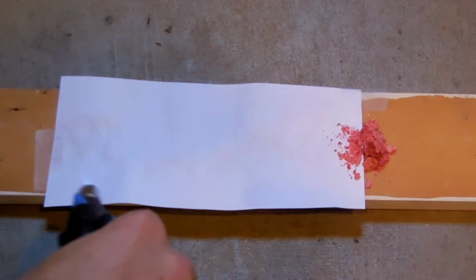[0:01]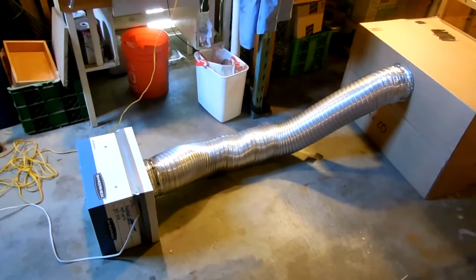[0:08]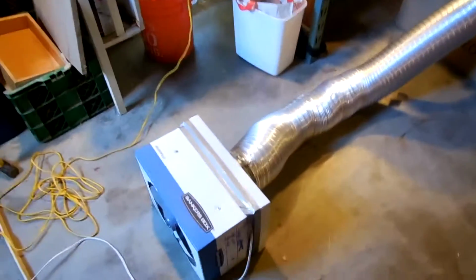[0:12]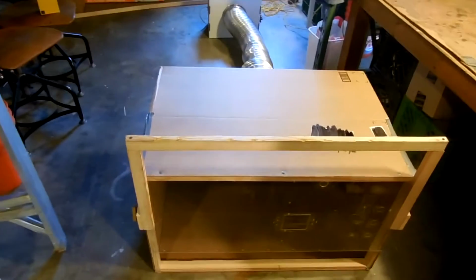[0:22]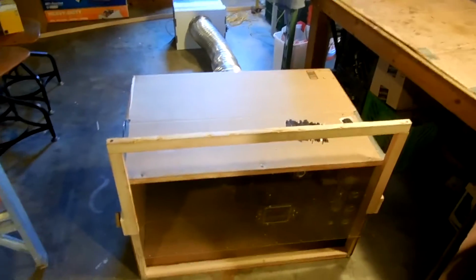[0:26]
Some of its features are it has a controllable speed fan, it's got four settings, and it's got an adjustable sash that raises and lowers. So stick around if you want to see a commentated speed build on how I made my fume hood.
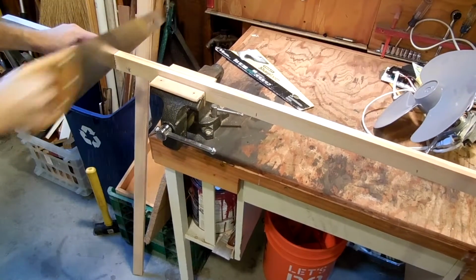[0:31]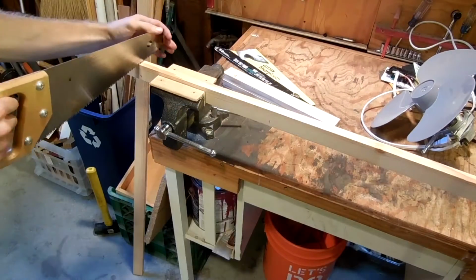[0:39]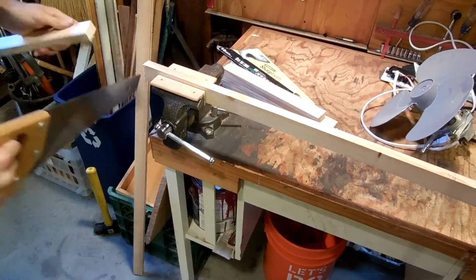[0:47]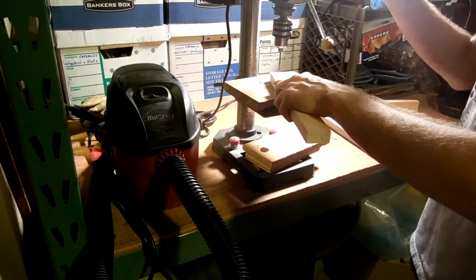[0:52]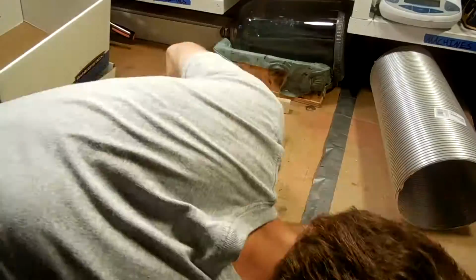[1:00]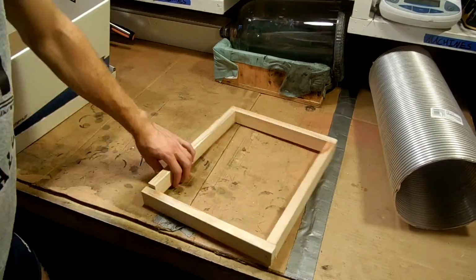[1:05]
So the first thing I did was measure the box to the fan, and then I sawed up some 1x2 to make a little frame for it. I just made four pieces. Then I did a little test fit, and they fit nicely. So I pre-drilled them on the drill press. Then I went over to the table and screwed them together with some little wood screws.
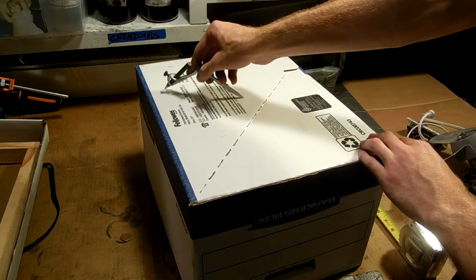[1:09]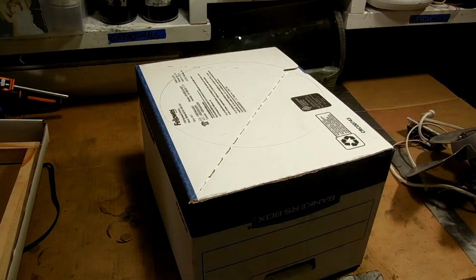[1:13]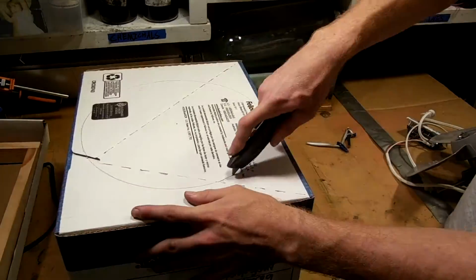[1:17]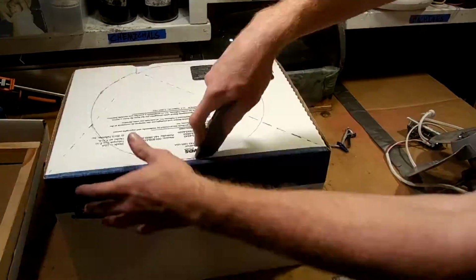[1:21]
Nice and solid. Next I went to the box, and I used a compass to draw the circle that'll cut out for the fan blade. And then I cut that out using an X-acto knife and also some shears to trim the hole to fit it perfectly.
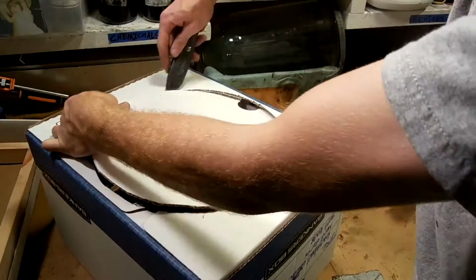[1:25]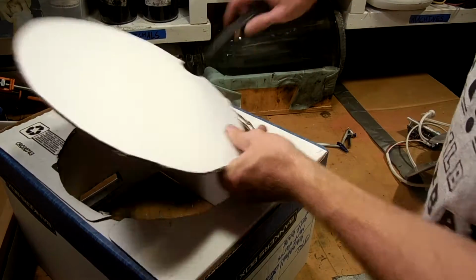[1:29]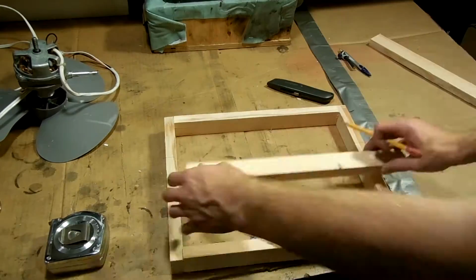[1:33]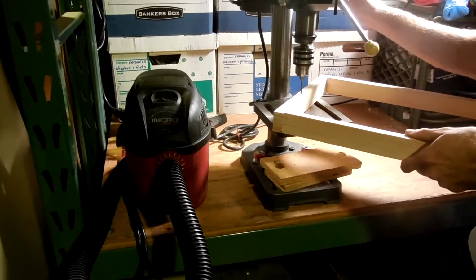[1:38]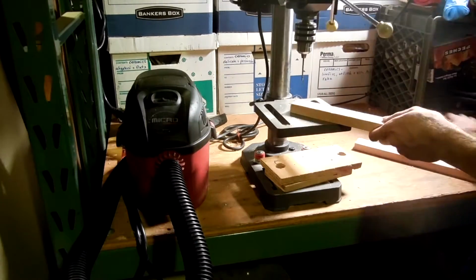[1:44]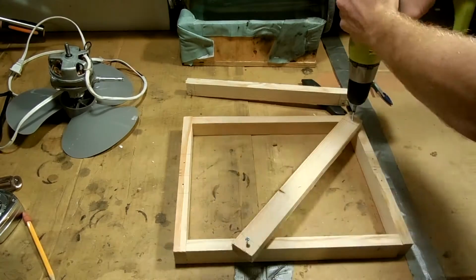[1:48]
Next, I measured the box to find the middle, and then I made some supports for the motor mount. I pre-drilled some holes in the frame itself, and then in the supports. And then I preloaded some screws into them, and then shot it into the frame.
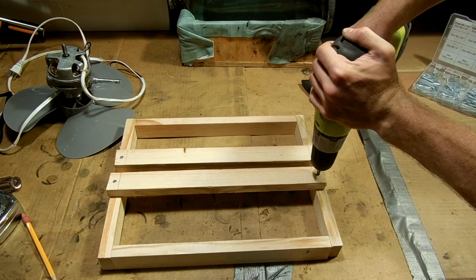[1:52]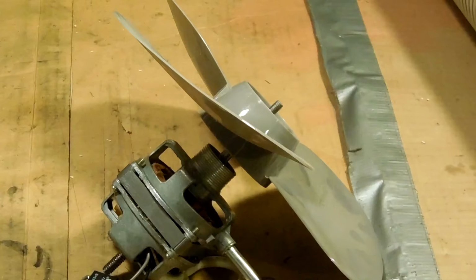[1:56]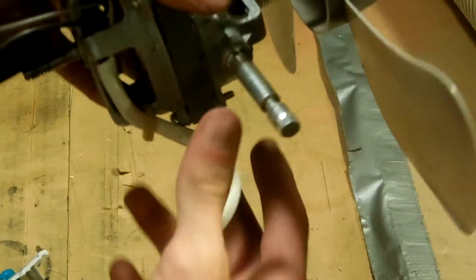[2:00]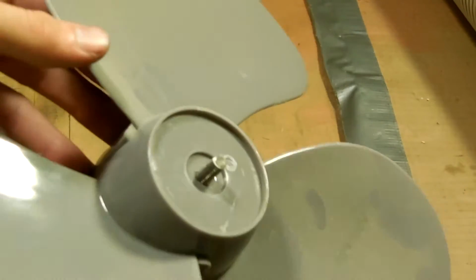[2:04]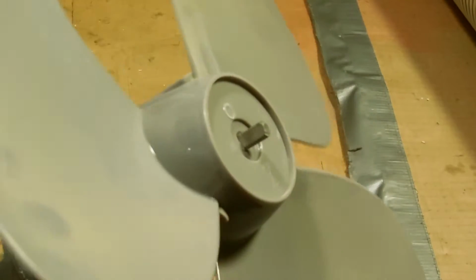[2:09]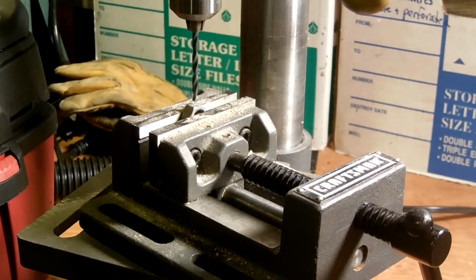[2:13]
Now the motor itself is an old salvaged fan motor that I got off of a house fan, but it has a left-hand thread nut on the front that I don't have anymore. So I need to make a set screw and a collar to hold on the fan blade. So that's what I'm going to do in this part.
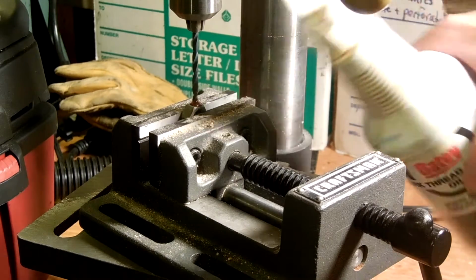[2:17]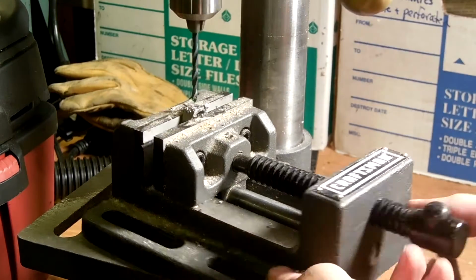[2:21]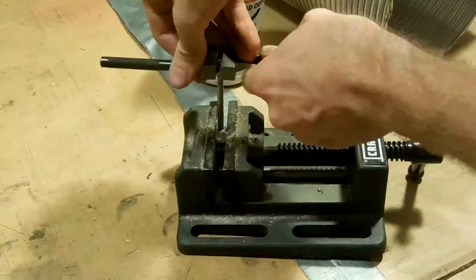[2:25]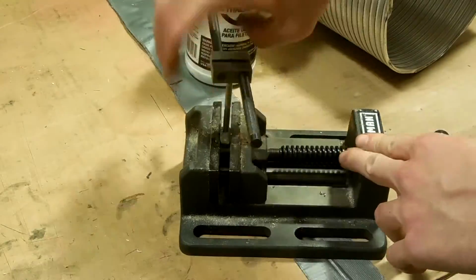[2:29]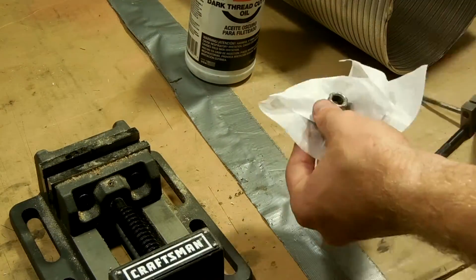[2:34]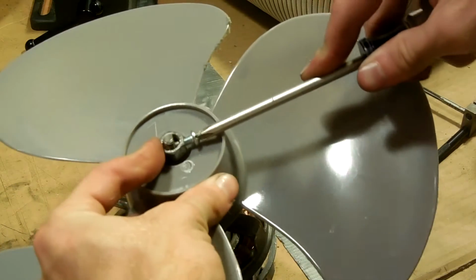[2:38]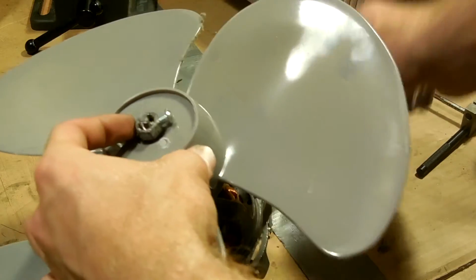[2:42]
So I took an old 5/16 nut that will fit over the shaft, and I'm drilling it out on the drill press with the correct size hole, and then I'm going to tap it with a 10-32 thread. Then I'll clean it up, and it's ready to go. Now I can install it with a 10-32 bolt, and it holds the propeller onto the fan very nicely. And that's not coming off.
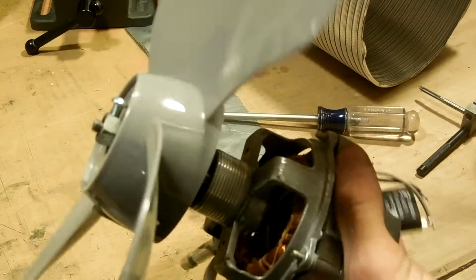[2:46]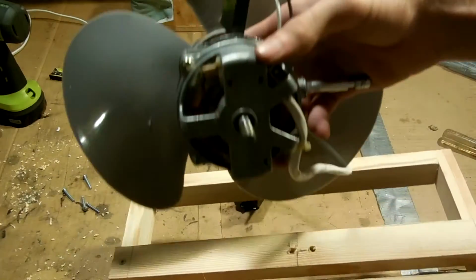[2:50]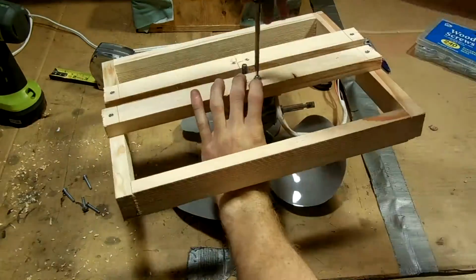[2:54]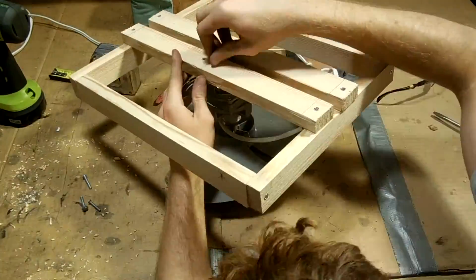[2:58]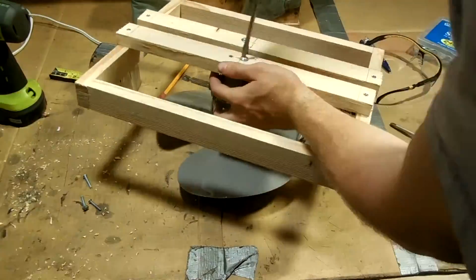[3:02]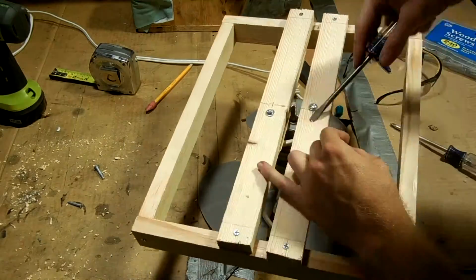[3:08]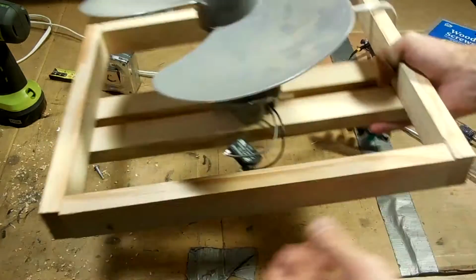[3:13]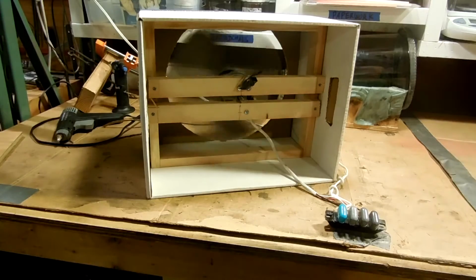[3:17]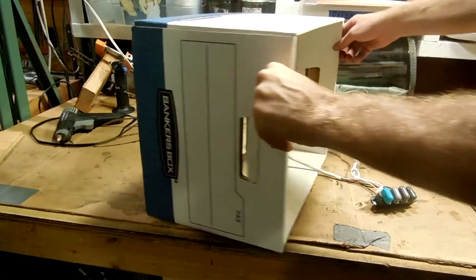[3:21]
Next, I looked at the holes in the back of the motor that I'm going to use to mount it, and I carefully measured. And then I used some little threaded screws to install the fan onto the frame. And I was pleased with the sturdy fit. Here's a test fit of the fan mount into the box, and it seems to work just fine.
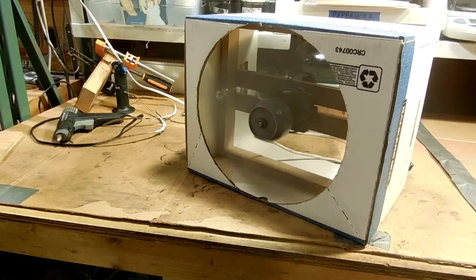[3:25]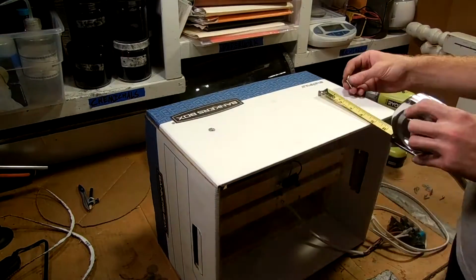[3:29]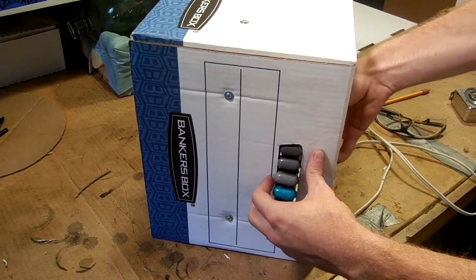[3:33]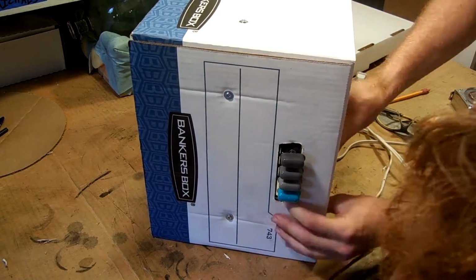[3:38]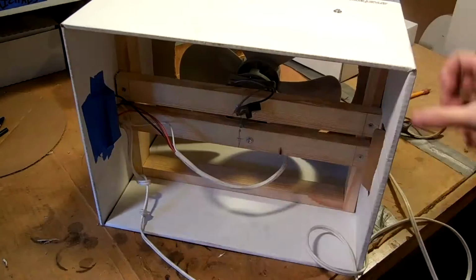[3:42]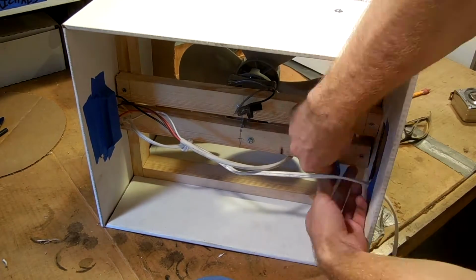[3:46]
Next, I just used some screws, and I measured the frame, and I screwed it directly into the box with some washers. Next, I put the button panel of the fan through one of the handles of the box, and taped it in the back. This is one thing that I have to revisit, because it really doesn't hold that well. But then I took the cord and I ran it through the other side of the box, and also taped that closed, so we don't lose air through those holes.
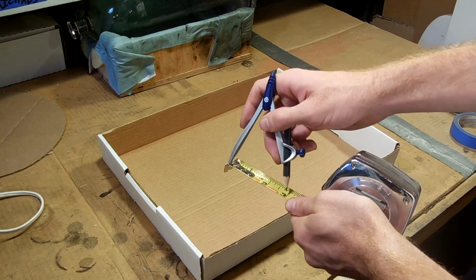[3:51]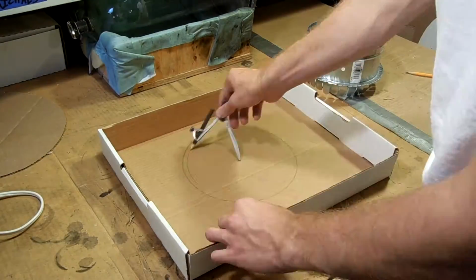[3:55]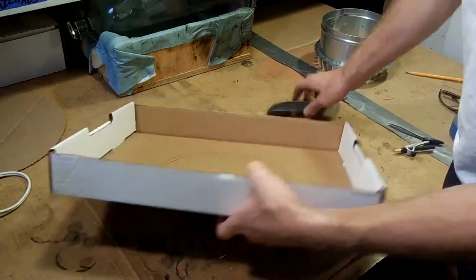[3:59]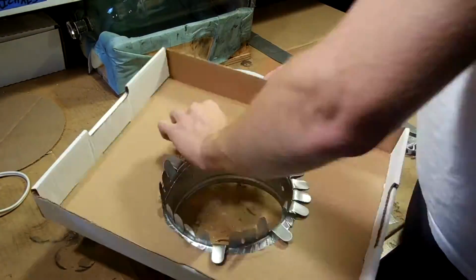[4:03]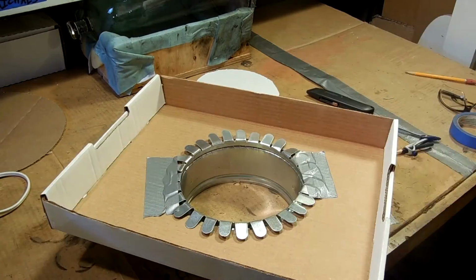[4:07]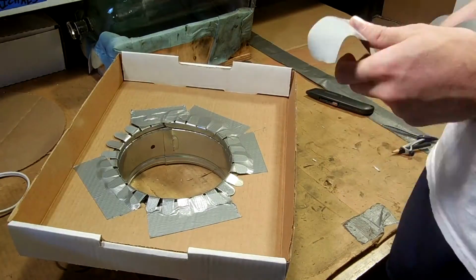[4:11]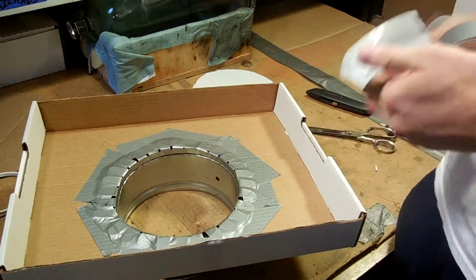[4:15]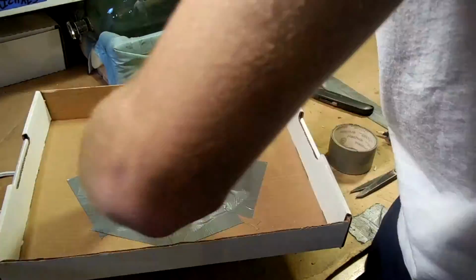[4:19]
Next, on the lid of the box, I measured a hole for the flange for my ductwork, and then I cut it out with an X-acto knife. The flange fit nicely through the hole, and then I bent down the tabs, and I had to use duct tape around it because I cut the hole a little bit too large. So this way I can still get a good seal, even with an imperfect hole. After that, I taped the lid of the box with the flange onto it, onto the rest of the box.
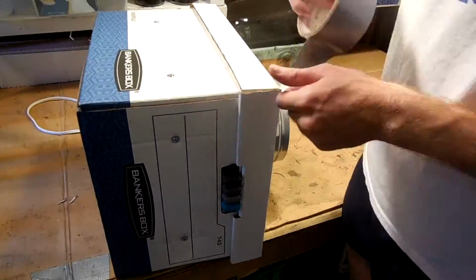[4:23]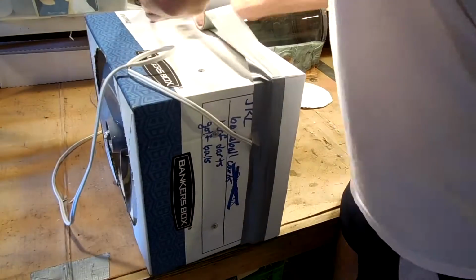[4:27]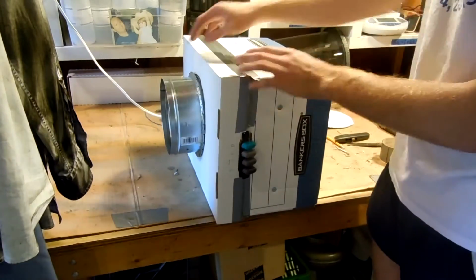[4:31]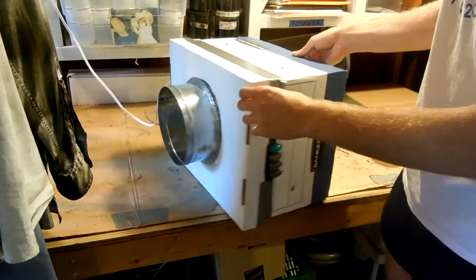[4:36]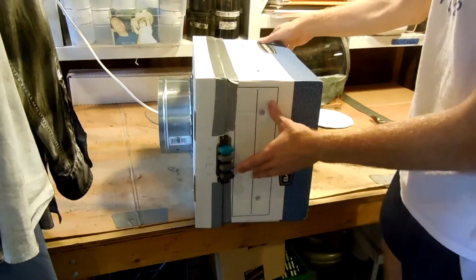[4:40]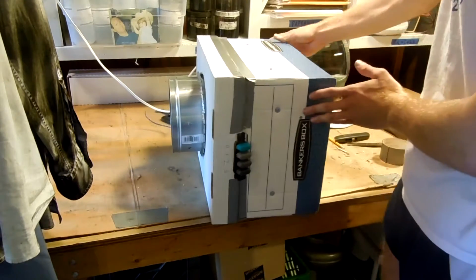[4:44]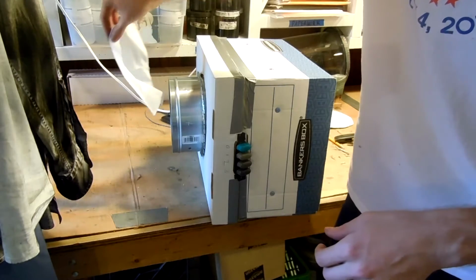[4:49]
So here's the finished box fan. It blows out this way, and it sucks from this end. We've got a flange for a hose, power one way, and the three-button control panel runs the fan, and on its highest setting, it certainly sucks pretty effectively.
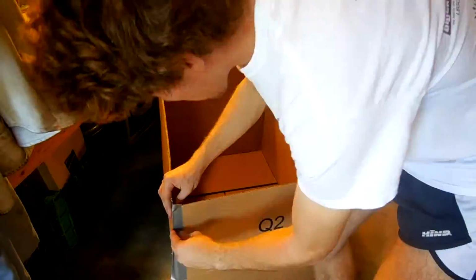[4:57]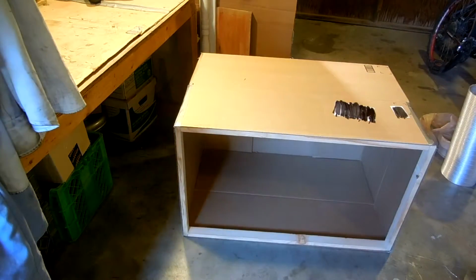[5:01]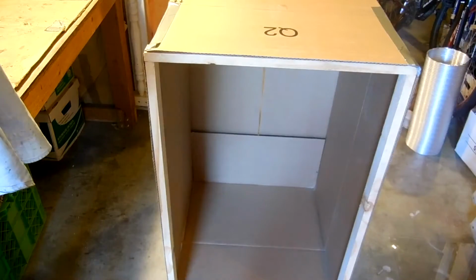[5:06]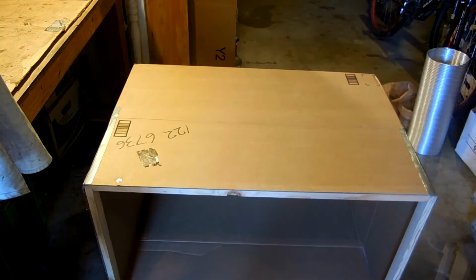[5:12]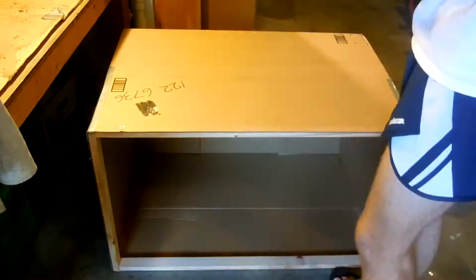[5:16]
Next, I've moved onto the box for the fume hood itself. I wanted it larger, so I took the tabs and taped them together with some duct tape to make the box extended. And then I made a similar frame as I did in the fan box out of the same wood, and I used some washers and screws to screw the cardboard box onto that, effectively making the box sturdier and also larger. I had a piece of bad wood and I had to replace it there. That's what I get for buying cheapest lumber possible.
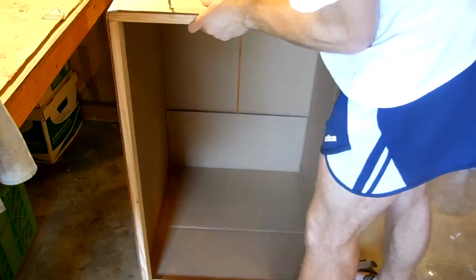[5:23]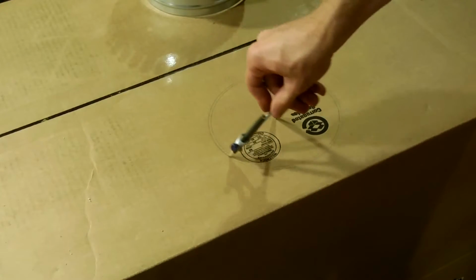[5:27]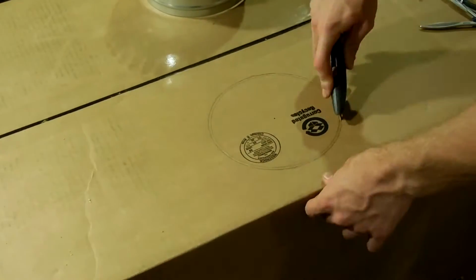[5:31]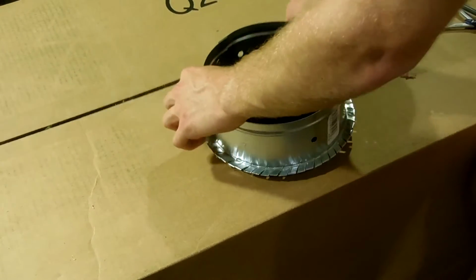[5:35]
Next, I cut a hole in the back, similarly for the flange, and this time it was a better fit and I didn't need any duct tape. So I popped it through, and that was that.
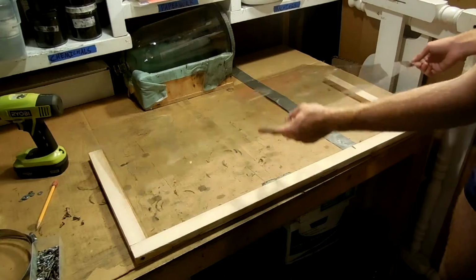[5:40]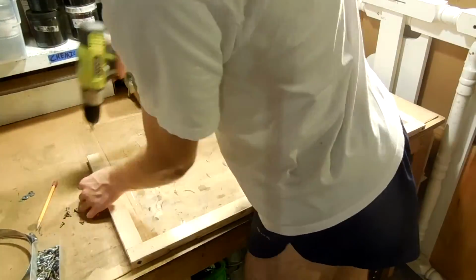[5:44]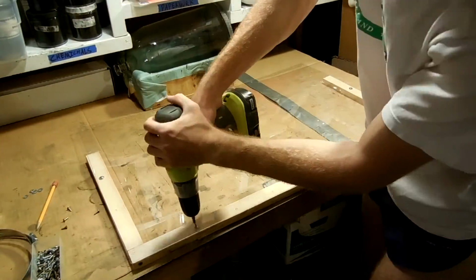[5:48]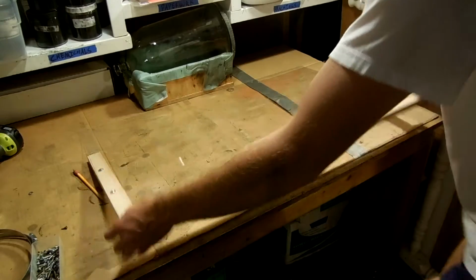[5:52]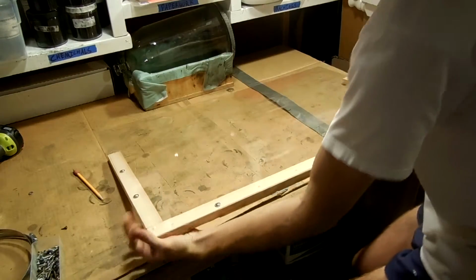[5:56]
For the sash itself, I'm using an old piece of acrylic, and I'm just screwing that onto a little frame that I whipped up, very similar to the other ones, again using little wood screws and washers. And there's my sash. Now it's time to make some hardware for the sash.
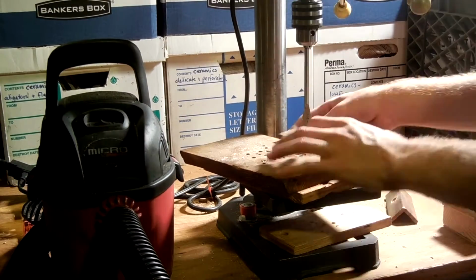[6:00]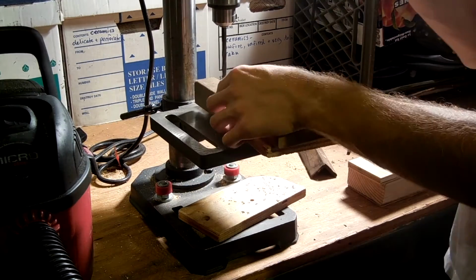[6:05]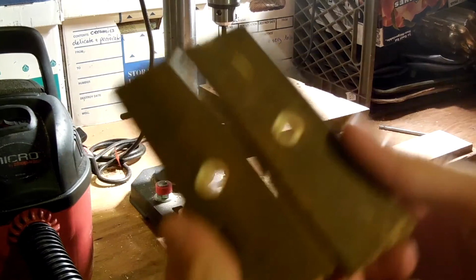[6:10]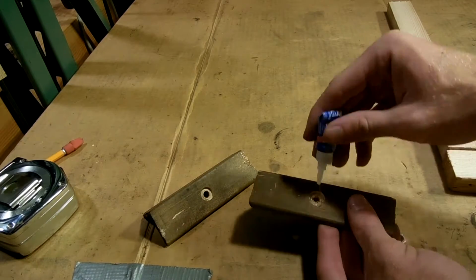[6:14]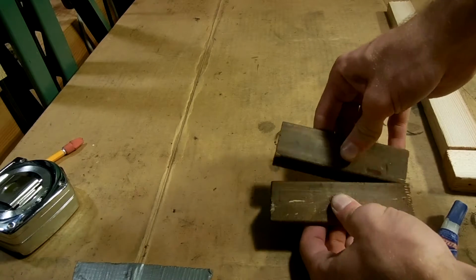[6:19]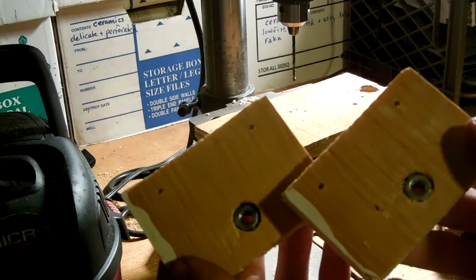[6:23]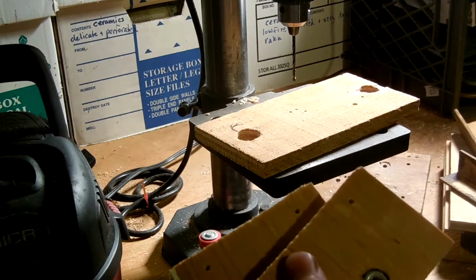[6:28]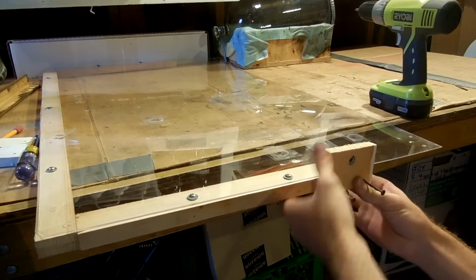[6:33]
So I'm drilling a piece of wood that I can fit a nut into to use as an attachment point. I drilled a 1/4-inch through hole and then used a spade bit to make a larger opening to fit the nut in. Next I used some super glue or cyanoacrylate glue to fit some nuts in. And now this is what I'll attach to. Eventually I ended up switching to a different layout. These are flat blocks, but it's the same idea. I pre-drilled those, and then I attached them onto the fume hood at the bottom of the frame.
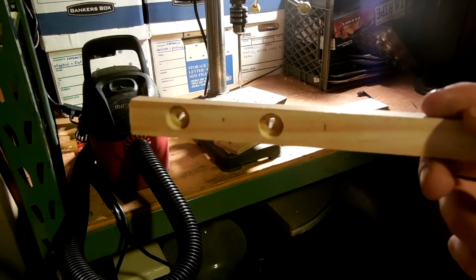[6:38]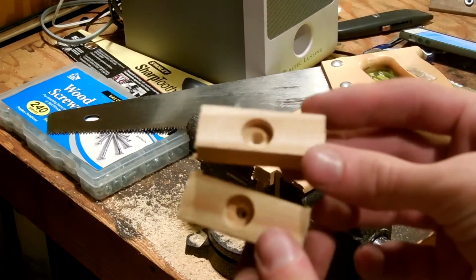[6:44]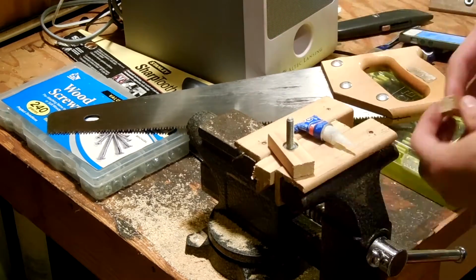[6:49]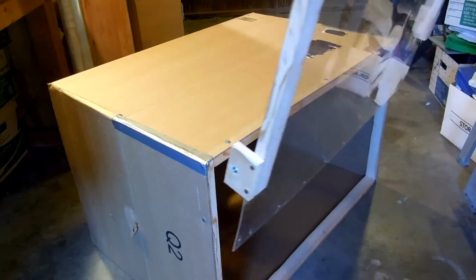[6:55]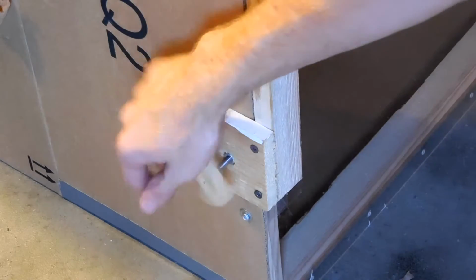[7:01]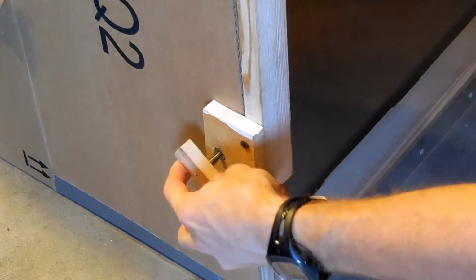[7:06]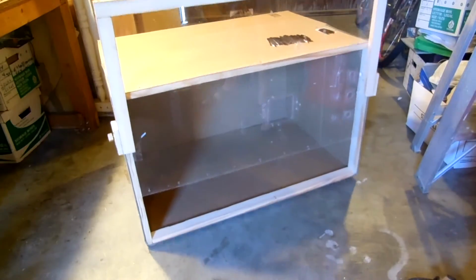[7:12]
Next, for the bolt, I cut similar holes into a strip of wood, and then I cut those down to size. Next, I used super glue again to attach the nuts into the wood, and hereby I made some knobs that I could use. Now I can slip the sash right onto the fume hood and thread on the nuts that'll hold it in place. And so this is how I'll adjust it up and down while holding it tight. And as you can see, it's pretty sturdy in any position. It really does hold on.
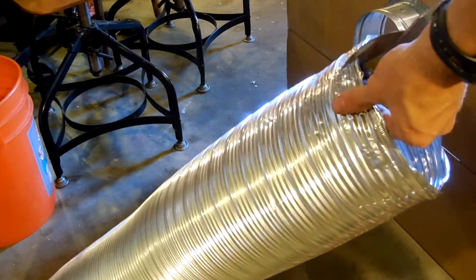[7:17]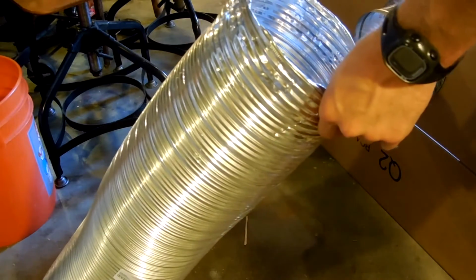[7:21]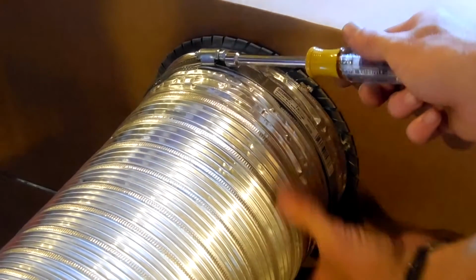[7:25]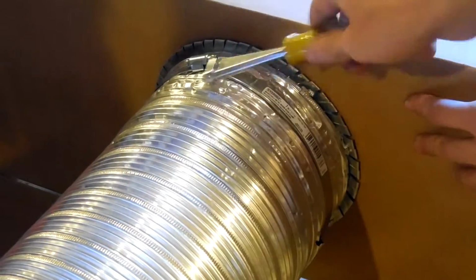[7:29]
Next, I installed the ductwork. I had to actually slit the ductwork a little bit to get it to fit onto the flange, even though it should have been a good fit. And then I used a 7-inch hose clamp to just secure it on.
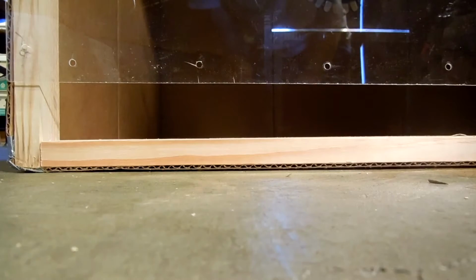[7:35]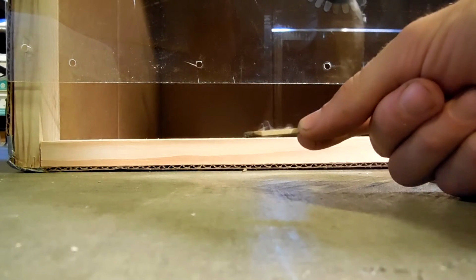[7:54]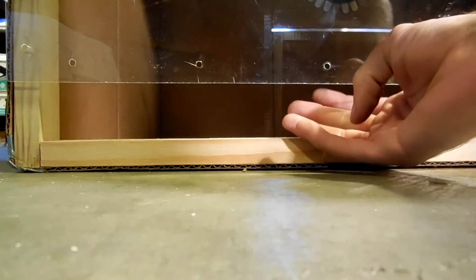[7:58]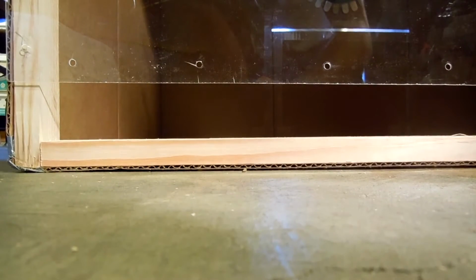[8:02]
Just to demonstrate the flow of my fume hood, this is with it set on maximum airflow and the sash pretty low. So here's just a match. It burns fine once we get it to catch. Then the smoke from the match gets pulled straight into the fume hood, even from pretty far away. And I can feel the airflow nicely on my hand, so I'm quite pleased with the performance of the device.
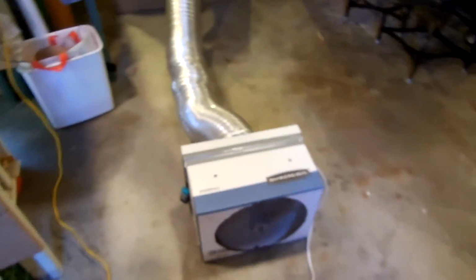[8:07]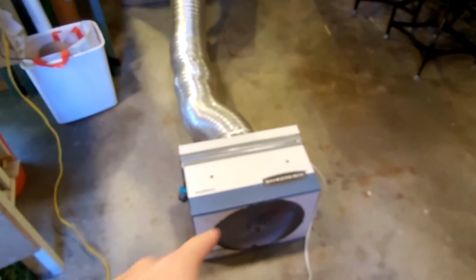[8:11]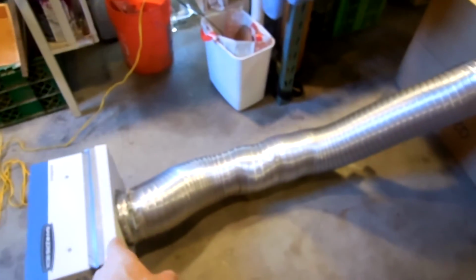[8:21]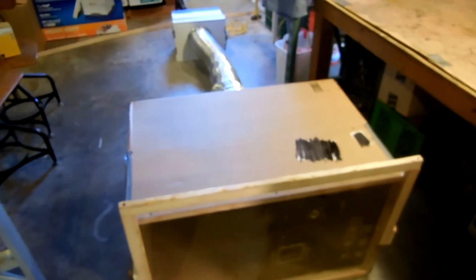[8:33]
So that's how I built my fume hood. I might make some modifications, but this is certainly the general design I'm going to be going with. One of the best parts about it is how cheap it was to make. I salvaged the fan from the side of the road, so that was free. The boxes were free. The only thing I actually spent money on was the ductwork, and all that together was about $30. Oh, forgive me, this wood, which was 91 cents for 8 feet. All that together was a very cheap project, and it's very effective, and I'm definitely going to be using it quite a bit coming up.